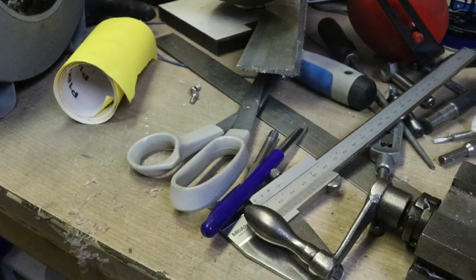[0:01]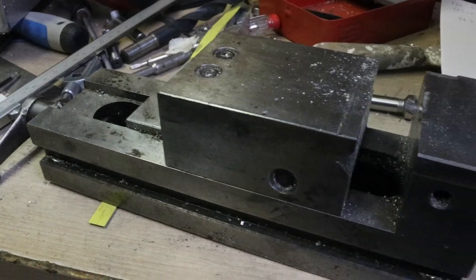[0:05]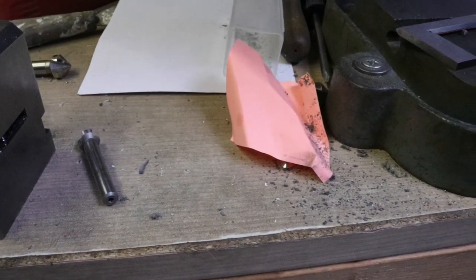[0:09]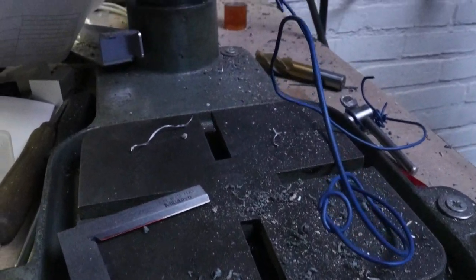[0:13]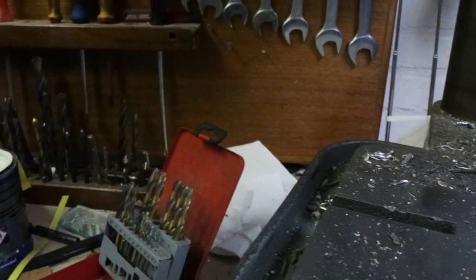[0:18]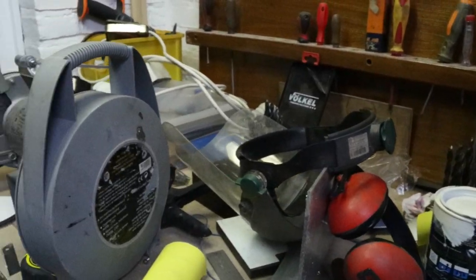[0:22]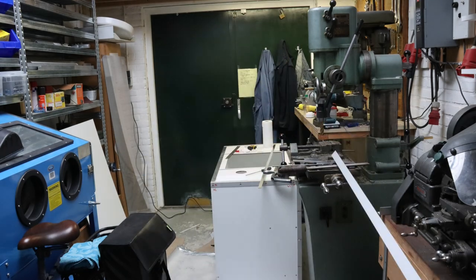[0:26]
Hi everyone! Last week I finished a new project and it turned my workshop into total chaos. Now this is nothing special really, it happens basically with every project I do. But I guess there's no way around it, it's just thermodynamics, because when you do work, entropy must go up, right? Anyway, after a few days of sawing, milling and drilling, the dust has finally settled.
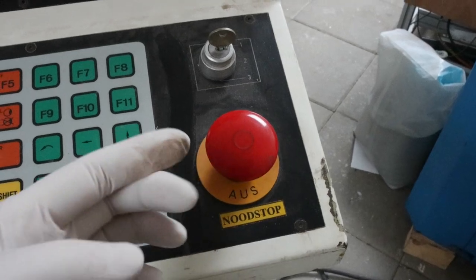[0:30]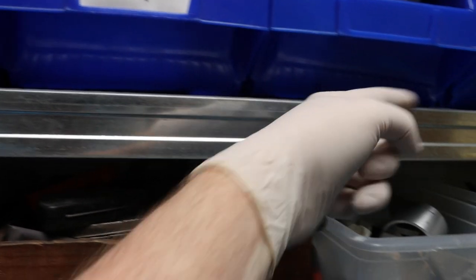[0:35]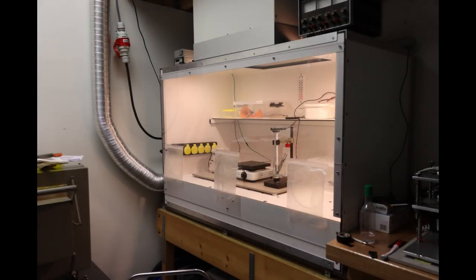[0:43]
And if you've seen some of my previous videos, you might think, dude, how are you ever going to do any serious photolithography in that place? Well, here's some good news. My latest project involved the making of a small cleanroom space.
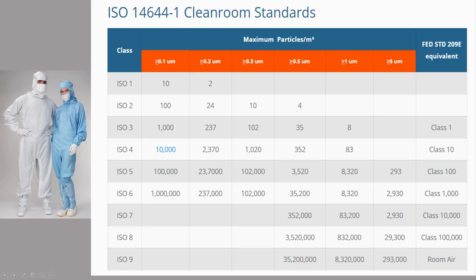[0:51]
Now, before I show you how I built it, just a short note on cleanrooms and their classifications. As you can see here, there are tremendous differences between the number of airborne particles in, for example, plain room air and a high-end clean room. For a class 1 clean room, the difference is even a factor of a million. Now, of course, you don't get to this level of cleanliness with an enclosure and a filter. You would have to be a little more rigorous than that and exclude every possible cause for particle contamination. So I'm not expecting to get anywhere near as good as a class 1, but maybe class 10,000 or 1,000. Anyway, that would already be a huge improvement over the current situation.
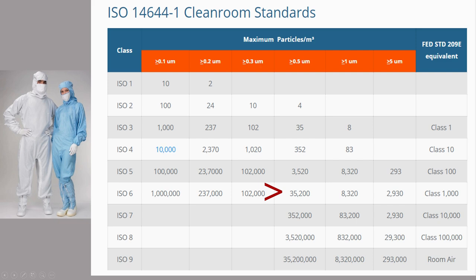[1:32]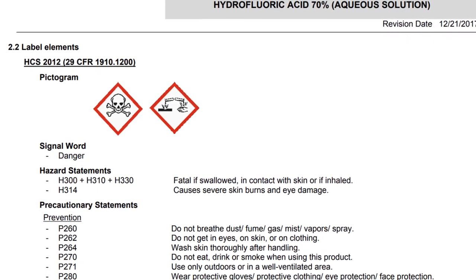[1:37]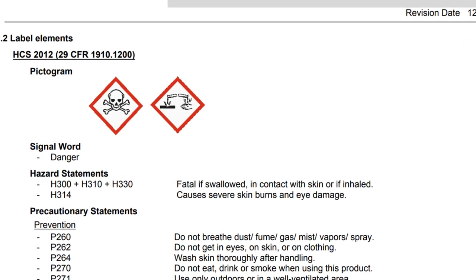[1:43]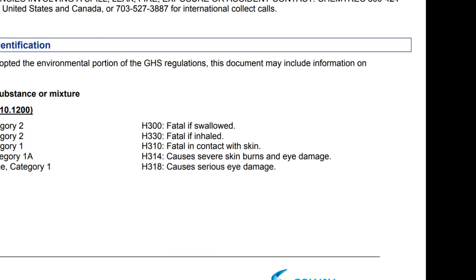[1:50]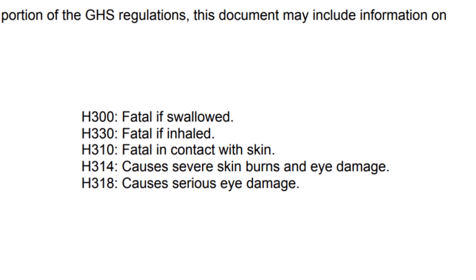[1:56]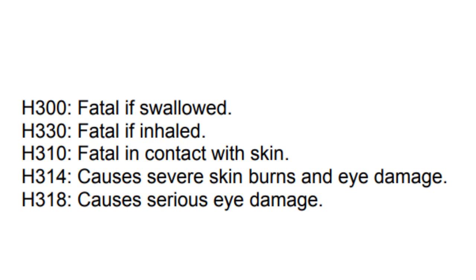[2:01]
There is also another intended purpose for this cupboard, and that is to be able to work safely with, for example, concentrated hydrogen fluoride solutions, which I want to use for etching glass. Now, as a chemist, I'm quite aware of the dangers of HF. And in fact, I know personally of a case of poisoning by HF gas in a lab I used to work in. And this incident actually led to the death of the student involved, not immediately, but after about 12 hours. So, to prevent a reenactment of this event, I'd rather keep things safe, especially since I work mostly alone in my workshop.
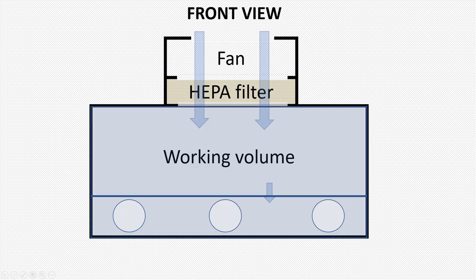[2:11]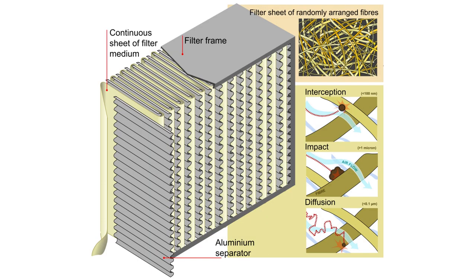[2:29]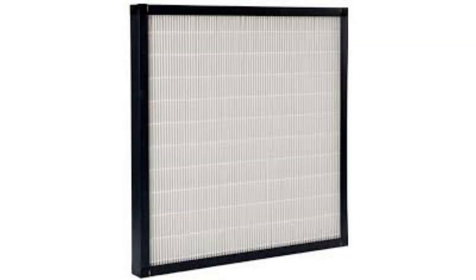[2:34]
Here's a schematic of the cupboard. Basically, the whole idea is that you continuously fill a box with filtered clean air. So, a fan blows air through a so-called high-efficiency particulate air filter, or HEPA filter for short, and it's basically a folded filter sheet with a very large surface, and it can filter out a large portion of the particles in air. As a basis for this project, I used a HEPA filter and a fan that came from an auction lot with some cleanroom equipment.
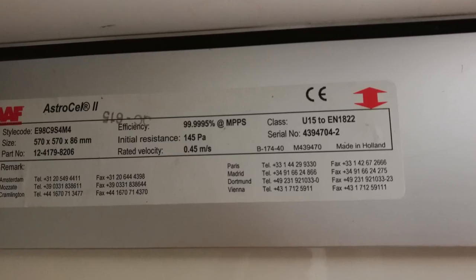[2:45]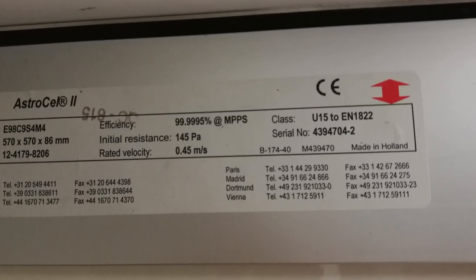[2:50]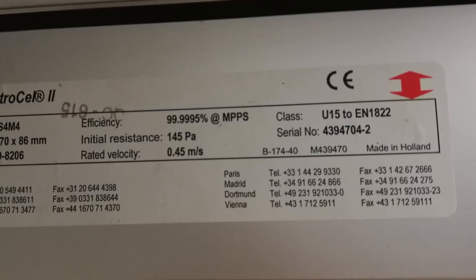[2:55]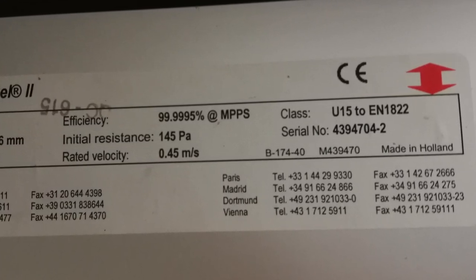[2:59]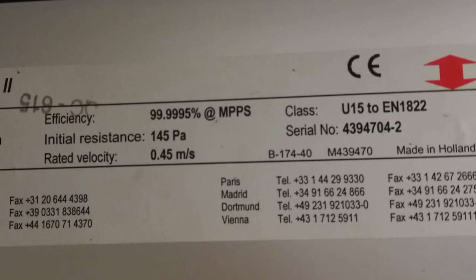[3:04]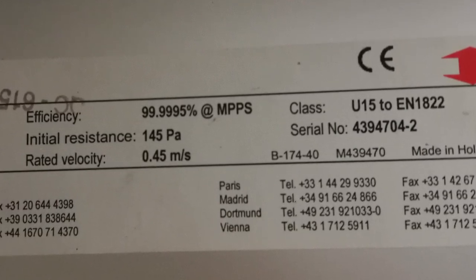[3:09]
And here's a photo of the label of the filter. And as you can see, the efficiency is indicated to be 99.9995%. But what does this mean? Well, the classification EN 1822 means that the indicated efficiency is referring to particles larger than 0.3 microns. So, of every million particles larger than 0.3 micron, only 5 will pass the filter. So, that's pretty impressive. And let's hope that the filter still delivers some of this initial performance.
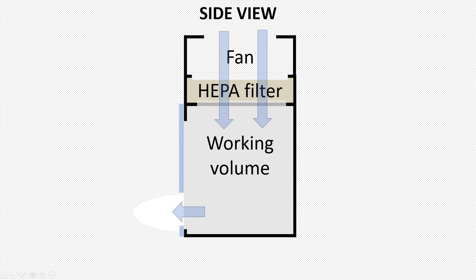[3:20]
Now, the idea is to use this filter to create a laminar flow of clean air inside a box by blowing the air through the HEPA filter from above. And by keeping the volume inside at a slight overpressure with respect to the surroundings, only clean air is flowing out and no dirty air can come in.
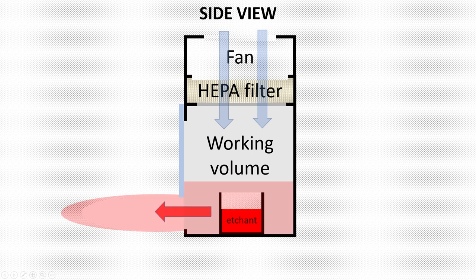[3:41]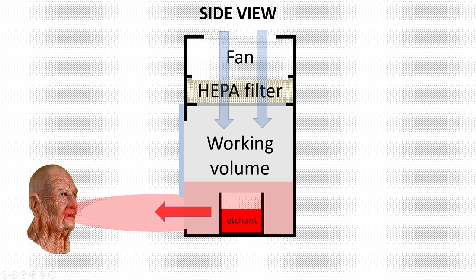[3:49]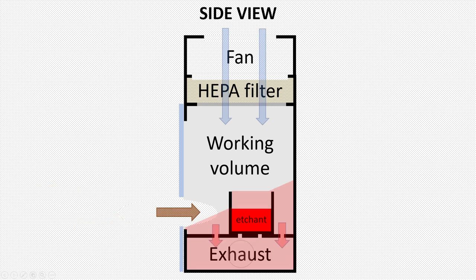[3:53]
However, since the secondary requirement of the cupboard is to allow for working with tricky substances, you can't just blow in clean air, right? Because it would blow the hazardous gas right into your face. So you need an additional exhaust, but if the exhaust is working too hard, you will suck in dirty air into the cupboard, which is also undesired. But on the other hand, if it's not working hard enough, you still risk contact with the hazardous substance.
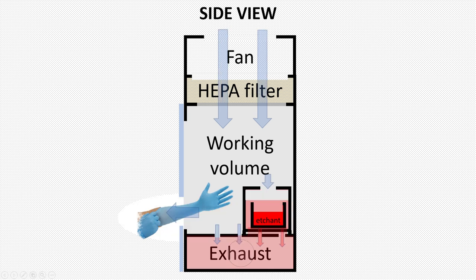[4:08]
Now, the solution to this is to add a small compartment where you can place the dangerous etchants and which is connected to the exhaust and which is at a slight underpressure with respect to the main volume of the cupboard. So now we can create an overpressure in the general work area while at the same time creating an airflow that does not allow etchant fumes to go back into the main volume and leave the box.
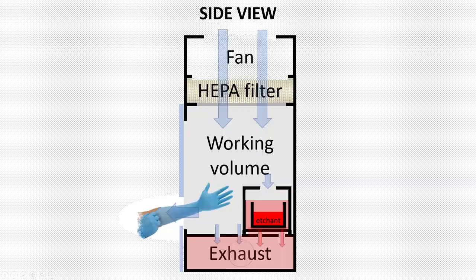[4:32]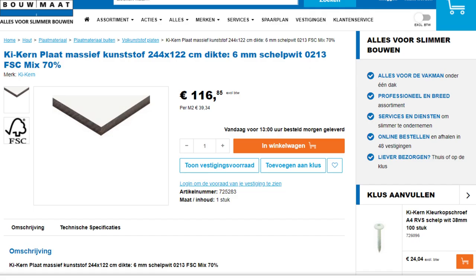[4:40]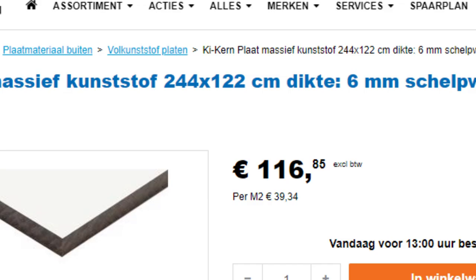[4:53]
I based my design on generic 6mm thick Trespa or similar plate material. This material is chemically inert, temperature resistant and non-flammable. In addition, it has a very hard and scratch resistant coating, which is easy to clean and does not release particles. And this material comes in plates of about 122 centimeters wide, so about 48 inches.
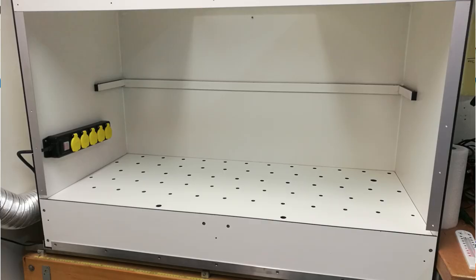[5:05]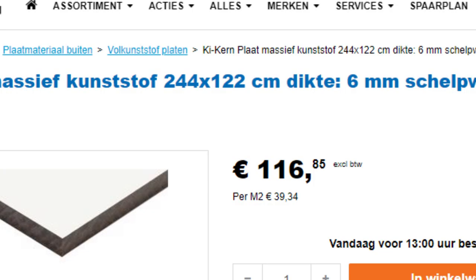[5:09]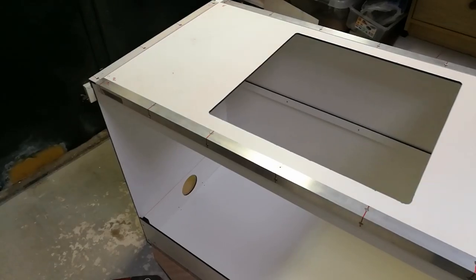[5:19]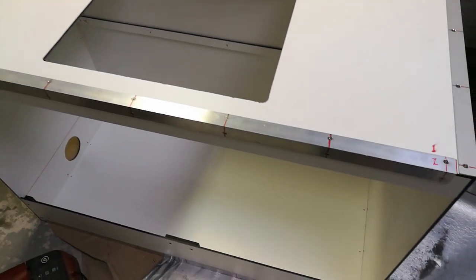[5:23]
That's why I decided to use exactly this dimension for the width of the box, basically to limit the amount of waste material, because it's kind of expensive, about 40 euros per square meter. Also, I could just ask the supplier to cut it into strips of the required width, so that saved me a lot of work.
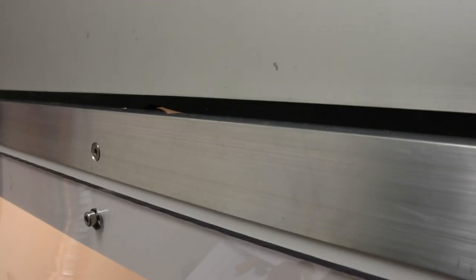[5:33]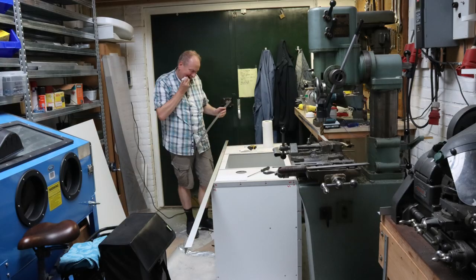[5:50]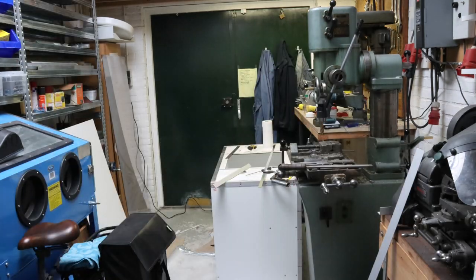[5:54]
The plates were mounted together using aluminum L profiles on the outside of the box using stainless steel M4 screws. These screws were tapped directly into the Trespa, connecting everything firmly together. By placing the aluminum strips on the outside, they cannot get into direct contact with, for example, the acidic etching fumes, which can corrode the aluminum. On the inside of the box, the corners were sealed using silicone kit. And in fact, the construction itself is in essence straightforward, so I'm not going to elaborate too much on this.
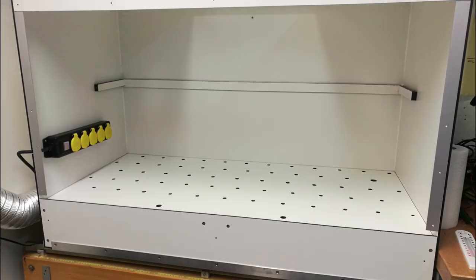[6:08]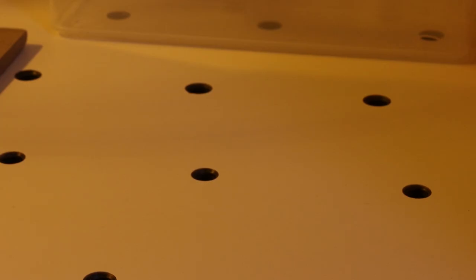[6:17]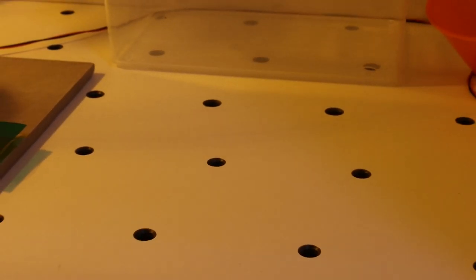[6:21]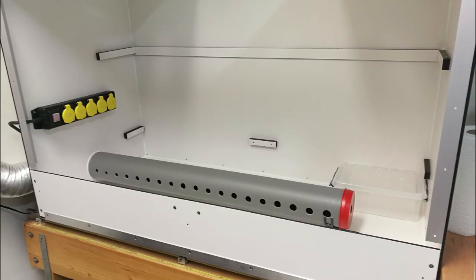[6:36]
Due to some space limitations on the back of the cupboard, I had to place the exhaust on one of the end sides of the box. This could easily lead to a pressure gradient over the exhaust surface, which is undesirable. So to prevent this gradient, the size and the number of holes in the exhaust plate was limited, which created a flow resistance between the workspace and the exhaust space below. Since the flow resistance inside the exhaust volume itself is very small compared to the resistance between the main volume and the exhaust, you only have a small pressure gradient. By the way, in the exhaust compartment I also added a tube to distribute the vacuum more uniformly over the complete width of the cupboard.
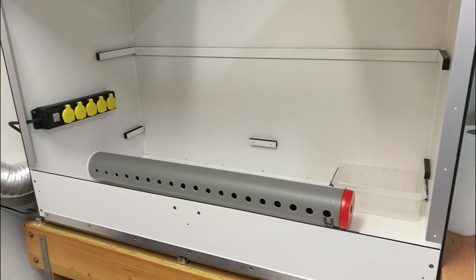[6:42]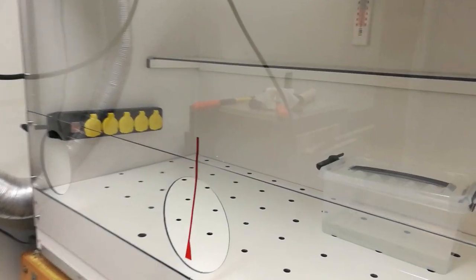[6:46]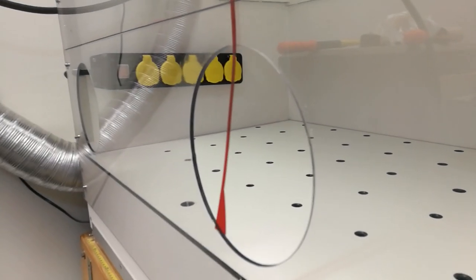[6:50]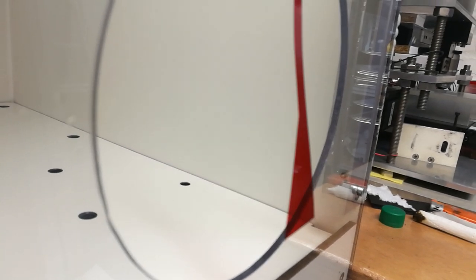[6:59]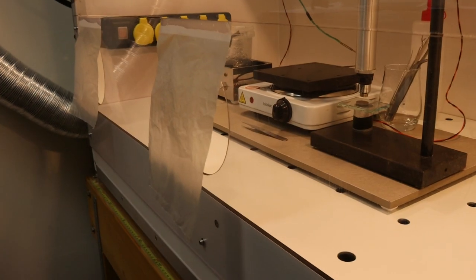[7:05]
The front window was made out of 4 mm thick polycarbonate, which was actually the most expensive item of the construction. It cost about 100 euros. Now, these plates are actually in short supply right now because of the high demand for COVID protection shields. The polycarbonate front plate was divided in two parts that can be individually removed for either better accessibility or better dust protection.
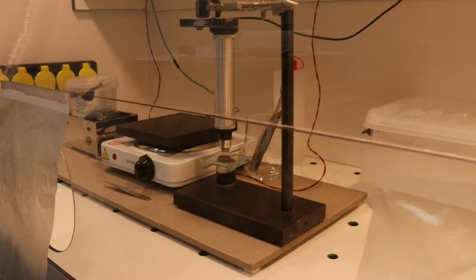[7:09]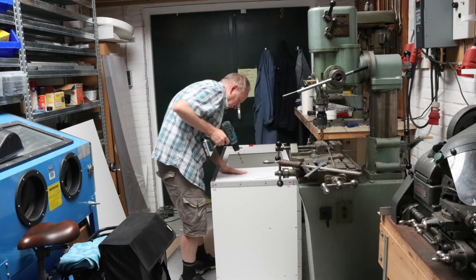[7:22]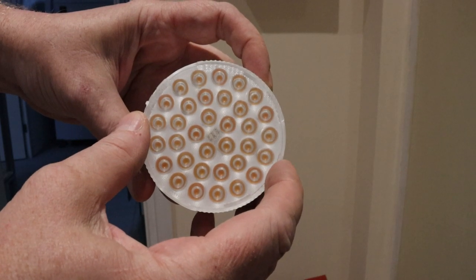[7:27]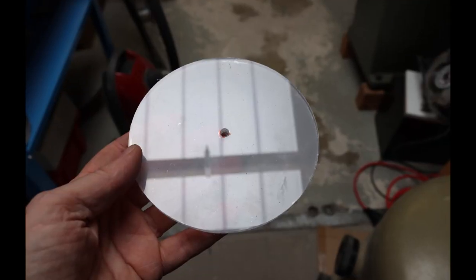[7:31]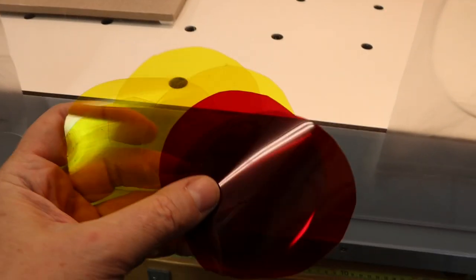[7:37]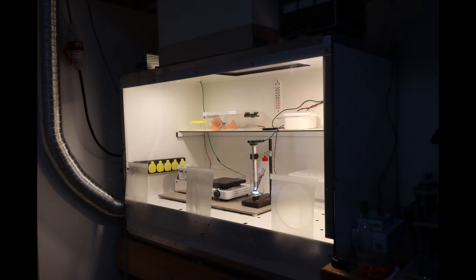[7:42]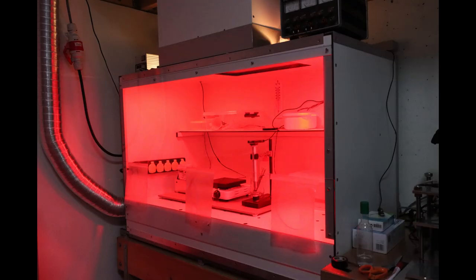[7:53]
One thing which is particularly important is good lighting inside the box, if only because it makes it easier to see dirt on, for example, surfaces. For this reason, I made two holes in the top of the cupboard that can hold very bright 10-watt LED light sources. And I closed off the holes using the polycarbonate discs that were left over from the holes in the front access plate. By placing color filters under the LED lights, it's easy to filter out, for example, UV light. This allows working with light-sensitive materials such as photoresists inside the box. And if needed, it's also possible to use a red filter if, for example, a substance is light-sensitive to green light.
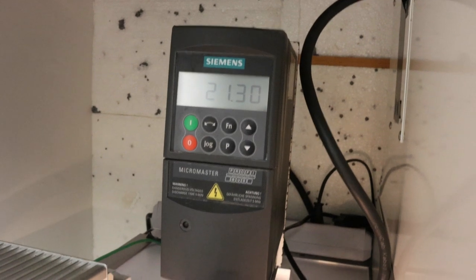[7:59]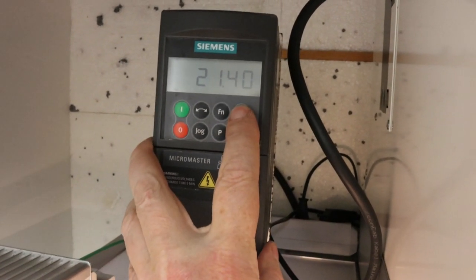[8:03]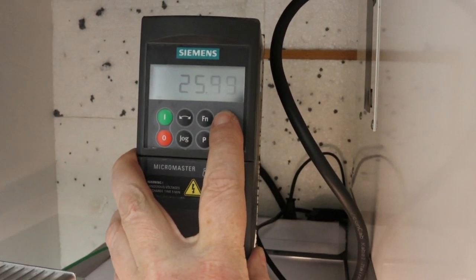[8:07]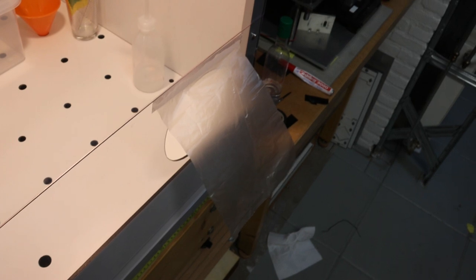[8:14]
To accurately control the inflow of air, I used an external frequency inverter that can regulate the fan speed. By the way, if someone knows an easy way to get rid of the high-pitched sound that these inverters generally make, let me know. It's not bad, but it's a bit annoying. For the exhaust, I just used the central vent of the workshop.
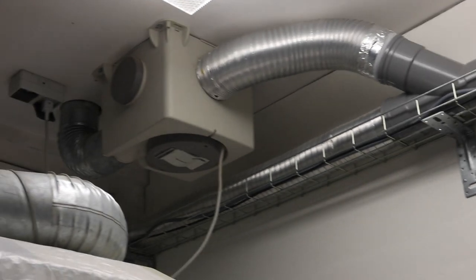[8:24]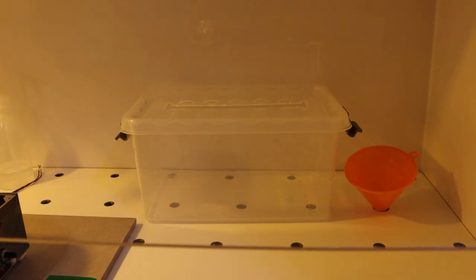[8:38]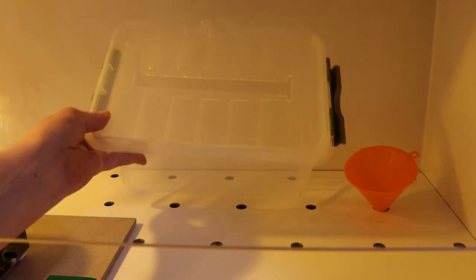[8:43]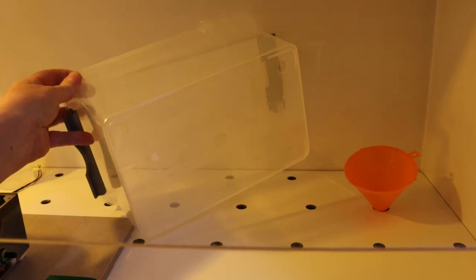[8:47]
The etching compartment I referred to earlier is actually just a standard polypropylene plastic container, because this material is chemically resistant to both strong solvents like acetone and also to strong acids. Now, a narrow slit in the lid allows for safe access from the top, while the holes in the bottom make the connection with the exhaust volume. These holes don't need to line up with the holes in the bottom plate because of the spacers present on the container.
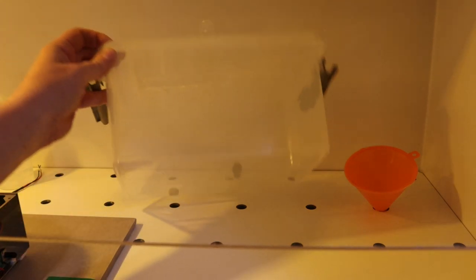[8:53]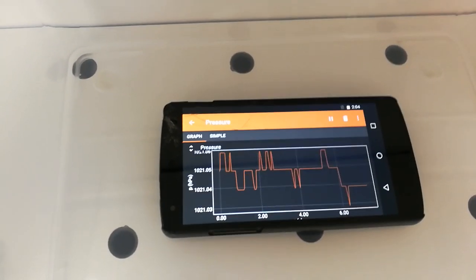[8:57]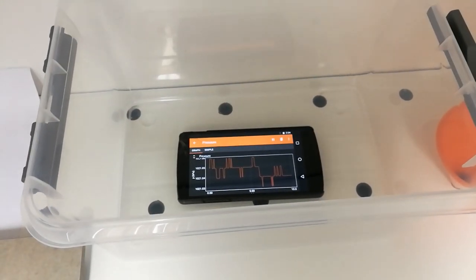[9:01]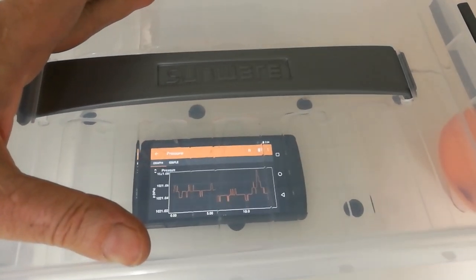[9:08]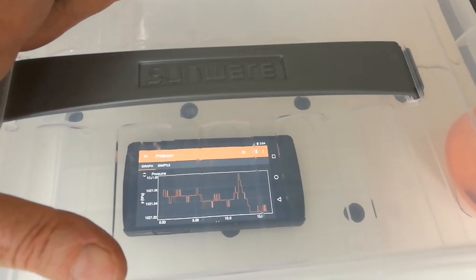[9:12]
I made sure that the etching compartment is indeed at a lower pressure than the rest of the working space by using the pressure sensor of a smartphone. The one I have is very sensitive. It can detect pressure differences as low as 0.01 millibar.
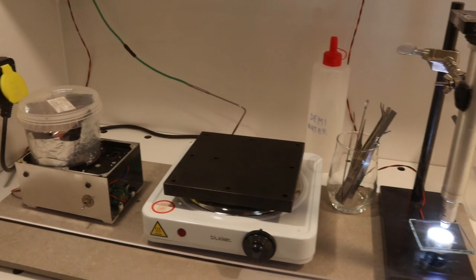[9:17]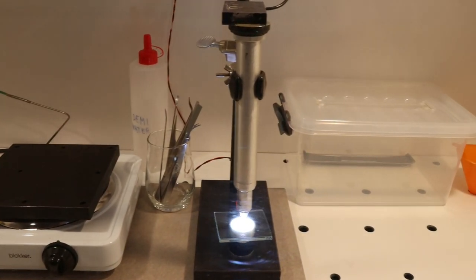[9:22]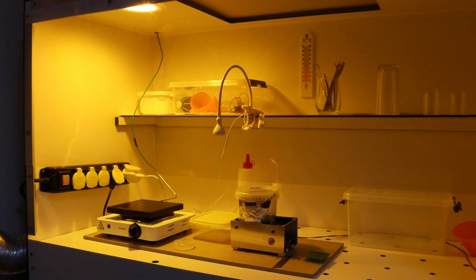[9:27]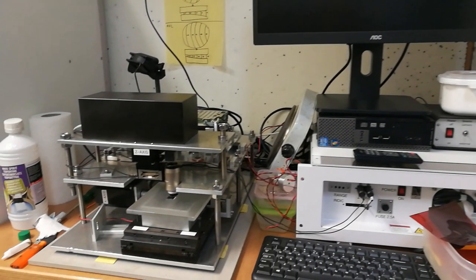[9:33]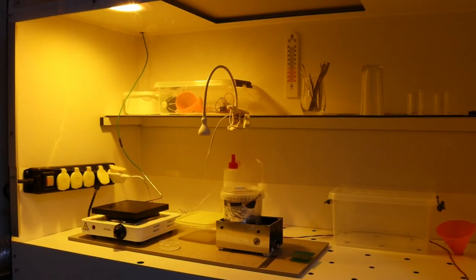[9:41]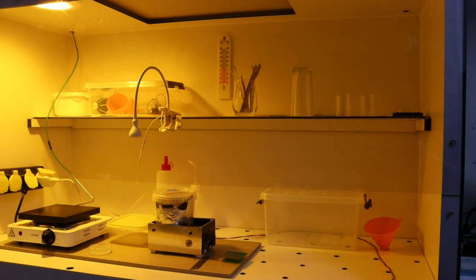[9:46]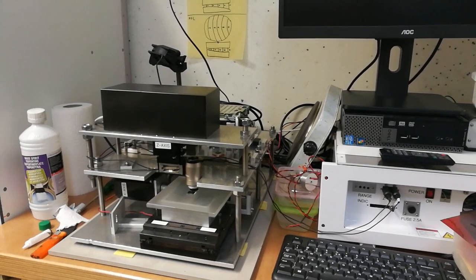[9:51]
Since I do not own a particle counter, I have not been able to measure anything yet regarding the cleanliness of the air inside the box, but I'm definitely planning to do this in the future. So hopefully this cupboard will improve the quality of the photolithography results. As you can see, the wafer stepper itself is still outside the cupboard, and it's also temporarily suffering from the elevated entropy levels. It would actually fit inside easily, but that would eat up a lot of workspace. So my plan is to make a separate downflow hood for this tool itself, and this hood can be much simpler since it does not require an exhaust.
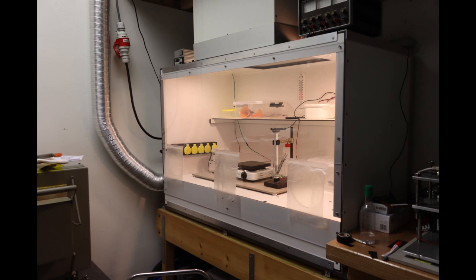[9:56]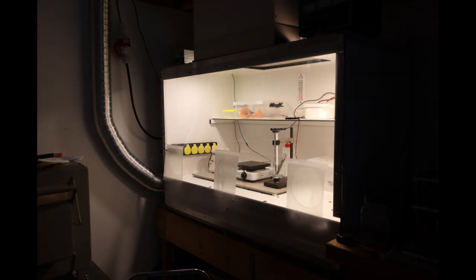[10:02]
So that's it for this video. The subject is a bit different from the previous videos, but I hope that the info is still useful to some of you.